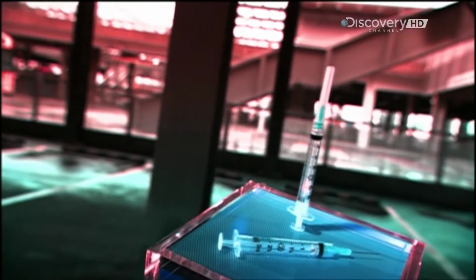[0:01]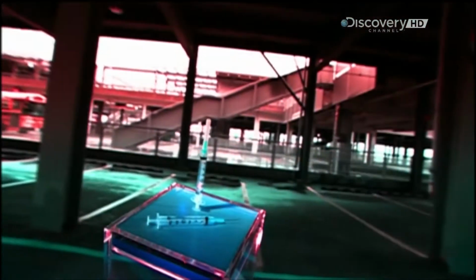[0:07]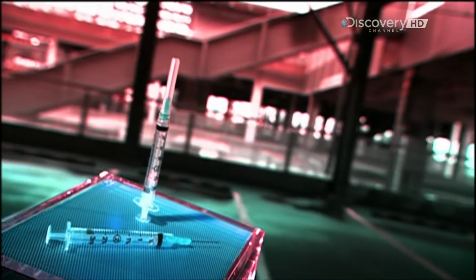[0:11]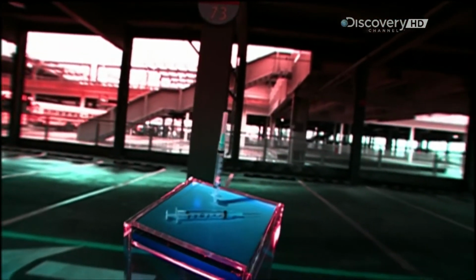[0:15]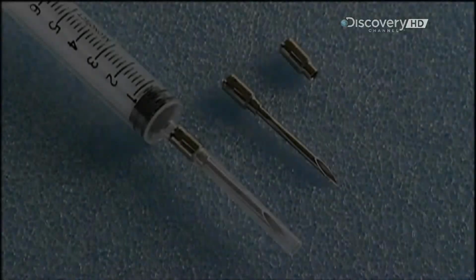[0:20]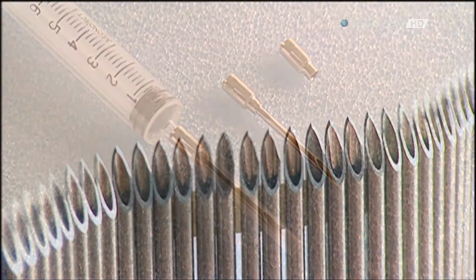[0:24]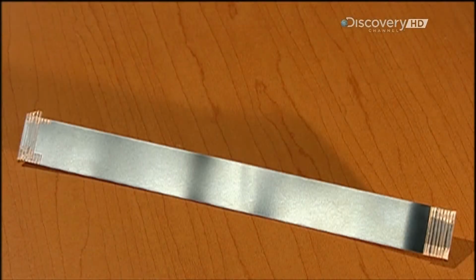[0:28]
The syringe was invented in the mid-19th century, but it wasn't until the 1950s that mass-produced disposable syringes came on the market, developed for the vast immunisation campaign against polio. Whether it's drawing blood or injecting medicine, this is one invention which has an important point to it. A syringe may make you cringe, but the treatment it delivers could be a lifesaver.
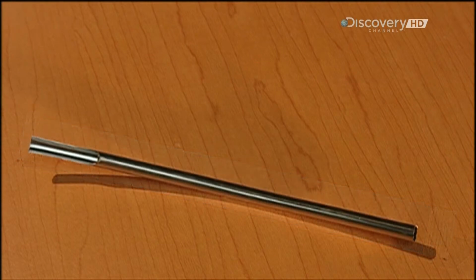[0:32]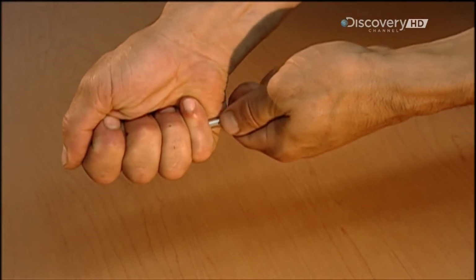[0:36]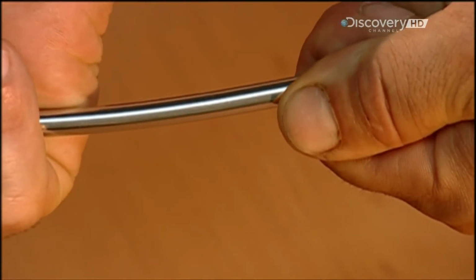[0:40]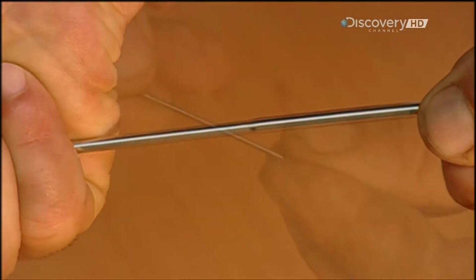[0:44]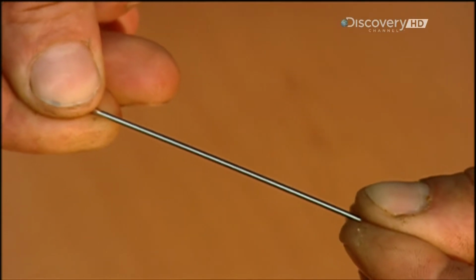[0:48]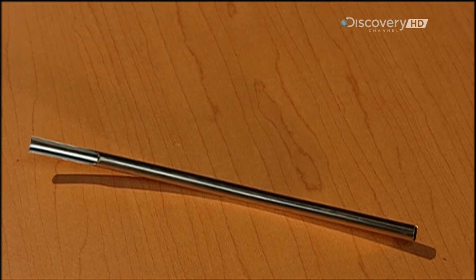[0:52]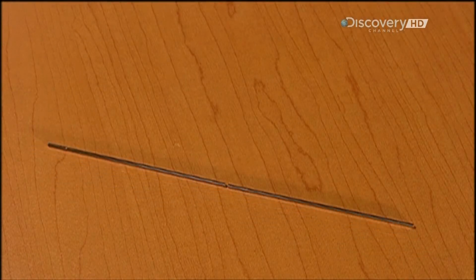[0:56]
To make a hypodermic needle, they start with a flat strip of stainless steel. A milling machine rolls it into a tube shape. A laser welds the seam together. But what makes the steel stiff enough to use is something called cold work, in which they press the tubing through a die several times. This also slims the tube dramatically, so now you have a thinner, tougher tube.
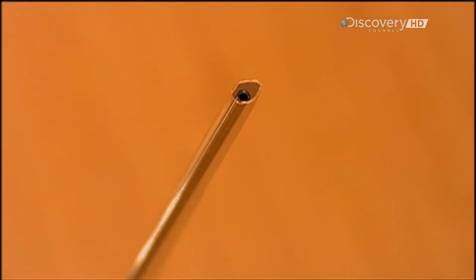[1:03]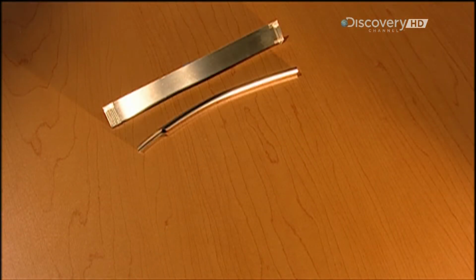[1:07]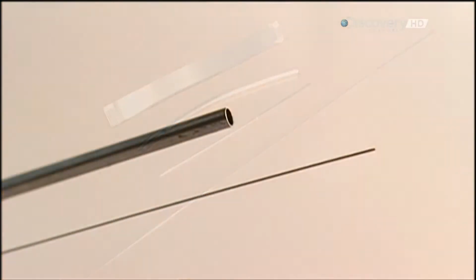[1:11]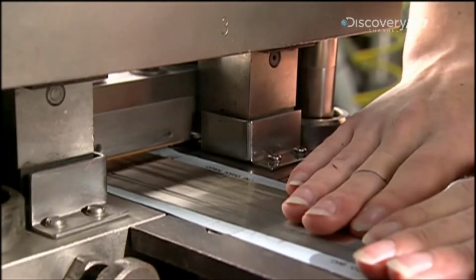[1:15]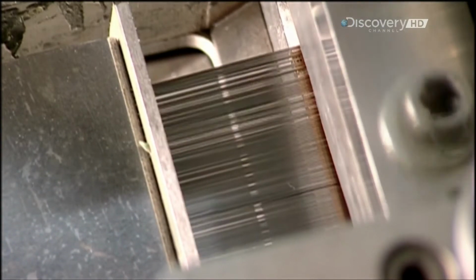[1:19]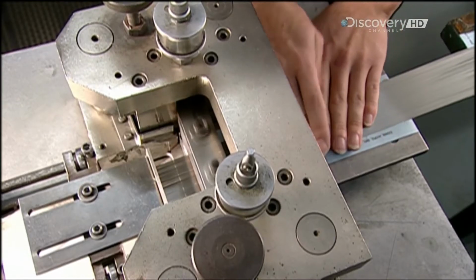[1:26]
It takes a couple of days to turn the stainless steel strip into a tube with needle potential, but it will have to be sharp to perform, and the next steps will focus on getting the steel tube to a point where it's more than just a blunt object. An electrically powered blade scores the walls of the tubes as rubber pads bear down and roll. This rolling causes the tubes to finally break at the score line. The tubes are being cut down to size, about 5 centimeters long.
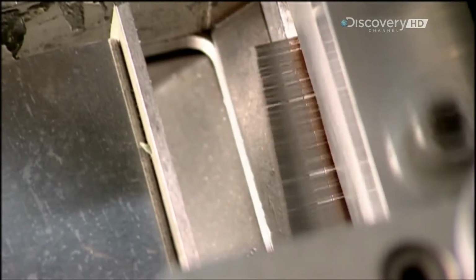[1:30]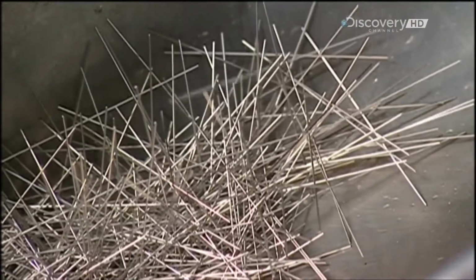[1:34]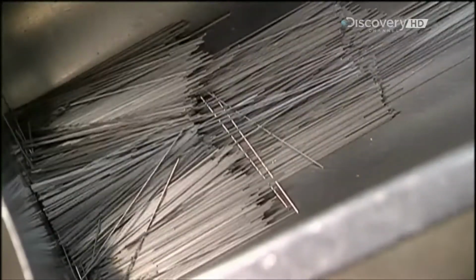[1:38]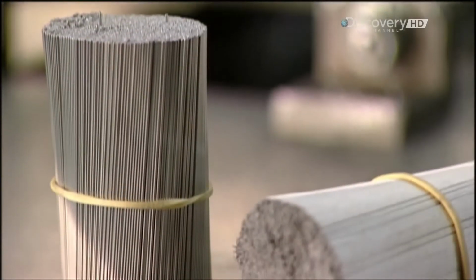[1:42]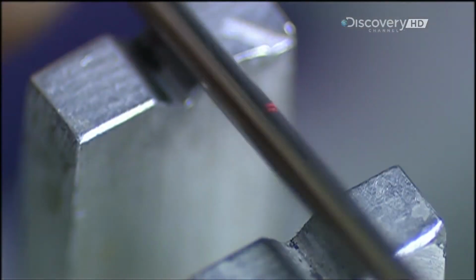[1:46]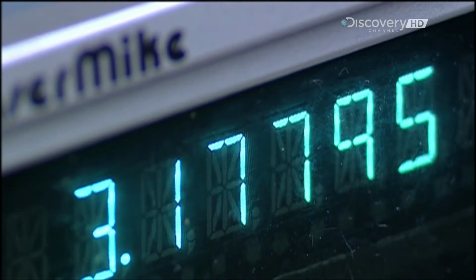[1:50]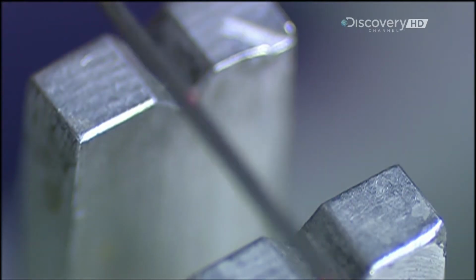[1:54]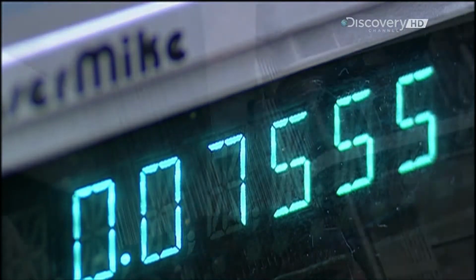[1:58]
The tubes fall into a bin, a tangled mess. The bin, driven by air pressure, agitates, and this shaking motion straightens them out. An operator bundles them together with elastic bands, but removes a few for checking. This micrometer uses laser light to measure the outside diameter. The tube is supposed to be 2 millimeters thick, and it's spot on.
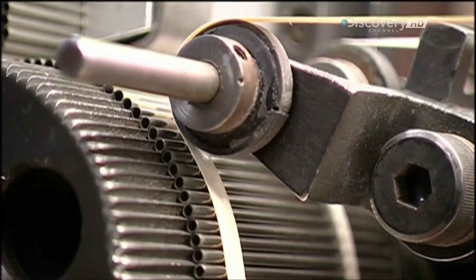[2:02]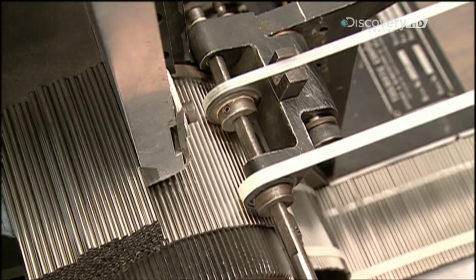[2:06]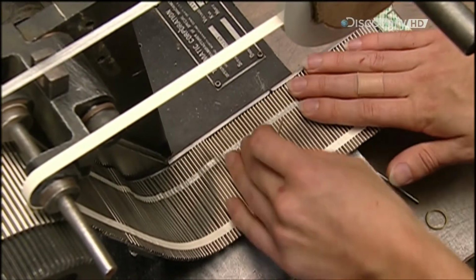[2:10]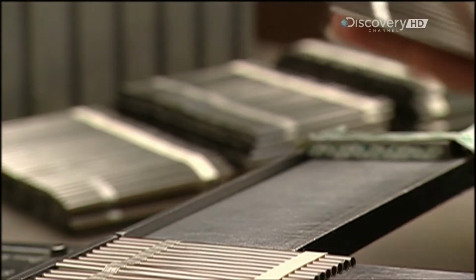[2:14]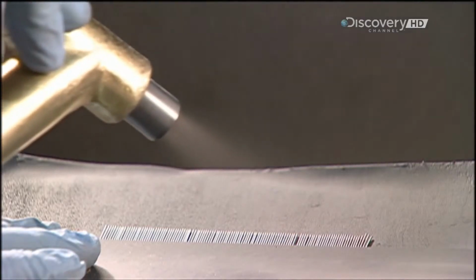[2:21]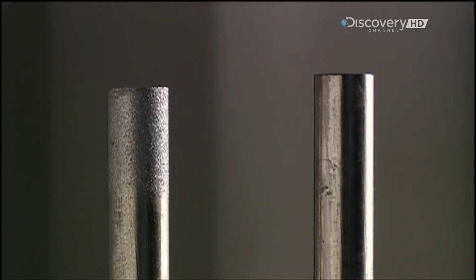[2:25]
Next, a mechanically driven drum rolls super adhesive tape onto the tubes. The tape will hold the tubes in place as more work is done on them. They cut 12-centimeter strips of the taped tubes, so that there are about 100 tubes per strip. Then, they spray aluminium oxide on the ends of the tubes. This roughens them, so that the surface will be easier to work with.
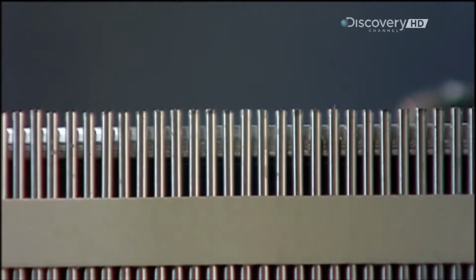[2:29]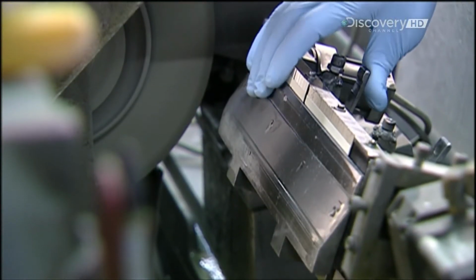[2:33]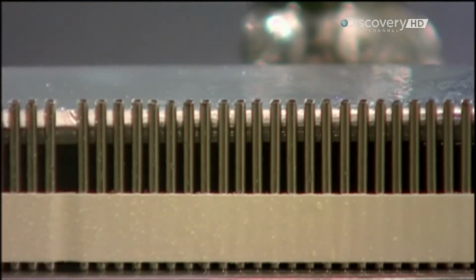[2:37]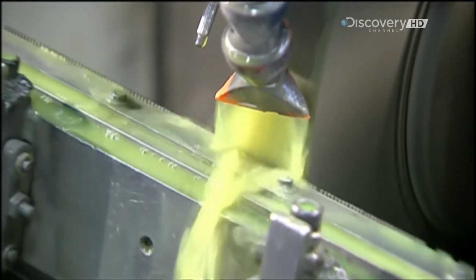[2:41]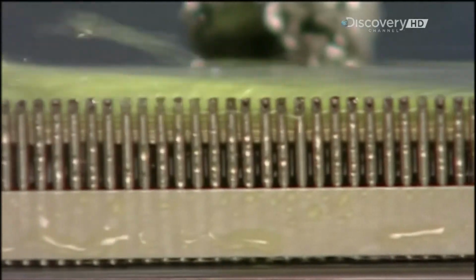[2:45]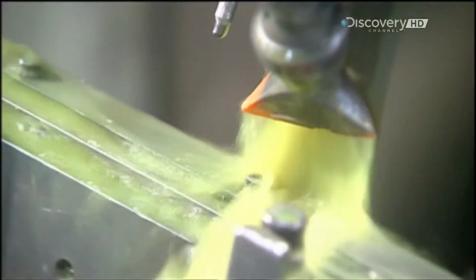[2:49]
Now they place the strips of tubes into the grinding fixture, and then they snap it shut. Coolant flushes over the tube tips as the fixture moves across a grinding wheel. The wheel grinds through the tops of the tubes, shaping them into a rough point. This is only the first grind, so it's not yet needle sharp.
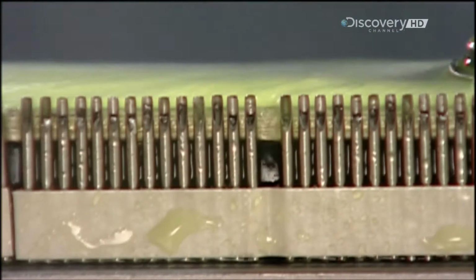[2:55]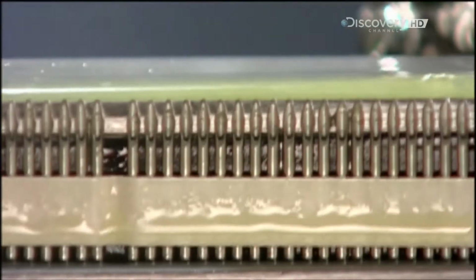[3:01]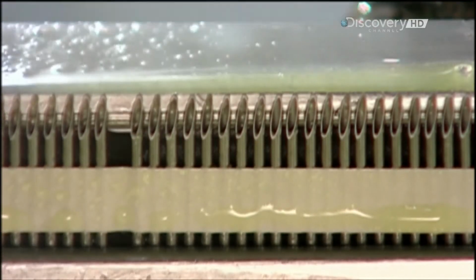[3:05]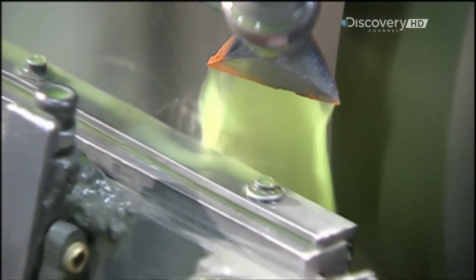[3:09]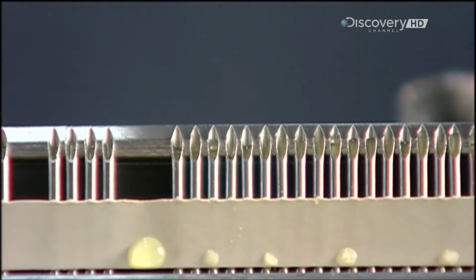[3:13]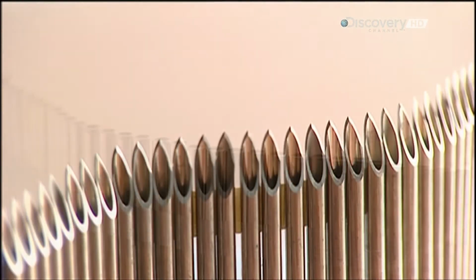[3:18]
Now, the fixture rolls and rotates the tubes. Then, it's back to the grind. The angle of the wheel is changed so that it sands the sides of the tubes. These two secondary grinds sharpen the tubes to a finer point. This is how they looked before grinding, and this is after, with their sharp needle tips.
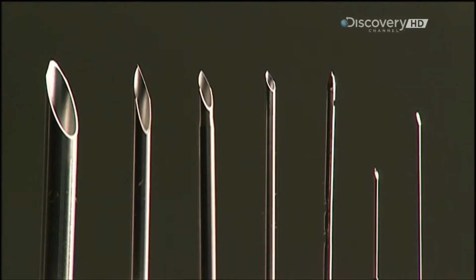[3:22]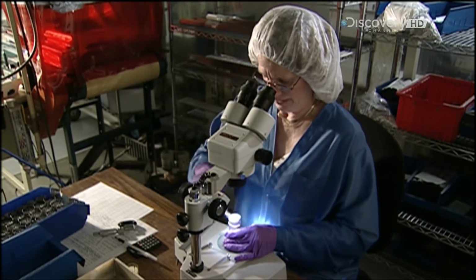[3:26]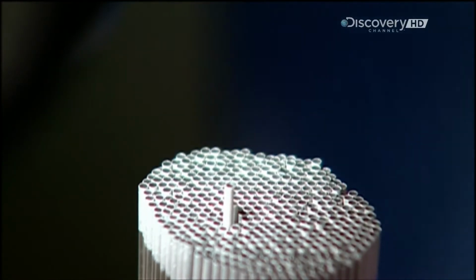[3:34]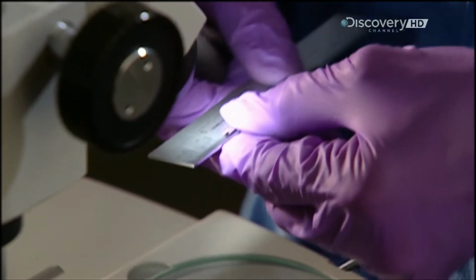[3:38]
Now it's time for the big inspection. The ends of the needles are pushed back to make sure they're even. And then, a needle is pulled out for sampling. The length of the grind is measured. It should be a few millimeters long.
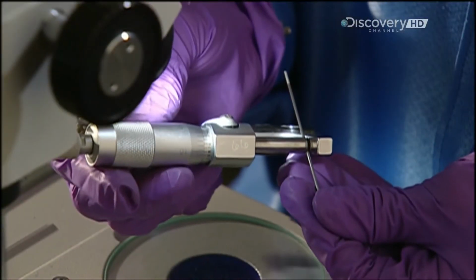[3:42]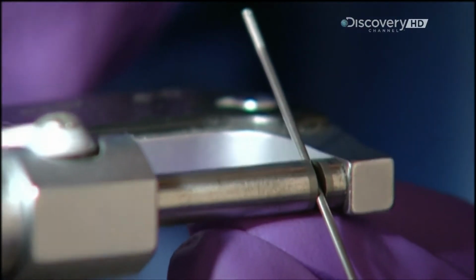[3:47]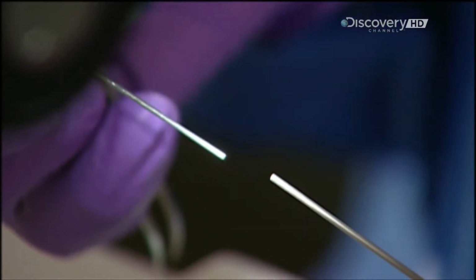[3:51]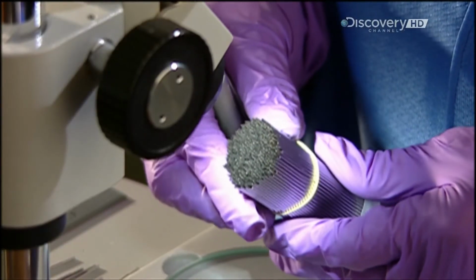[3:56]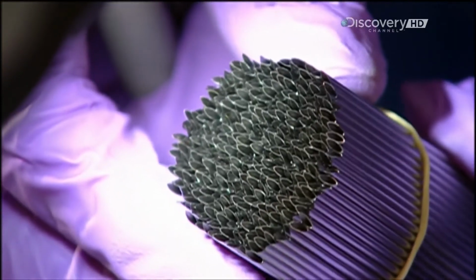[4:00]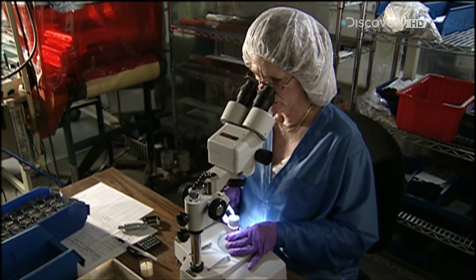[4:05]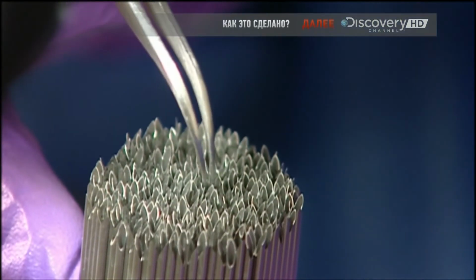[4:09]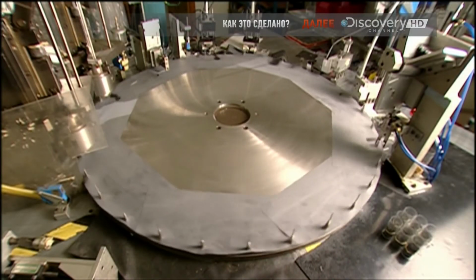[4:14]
The needle's diameter is checked with a micrometer. Holding the needle between posts, it measures the space between them. Then, the inside diameter is checked by inserting a plug gauge into the tube. Now, a bundle is inspected for irregularities or burrs. Using tweezers, one is removed for a close-up look under the microscope. Once they pass inspection, it's onto the automated assembly machine.
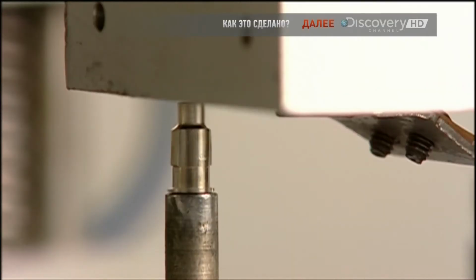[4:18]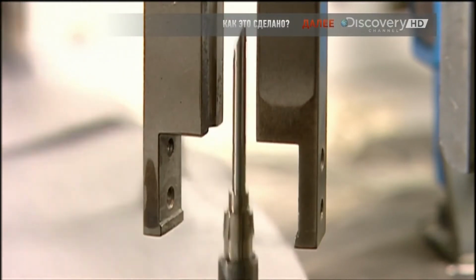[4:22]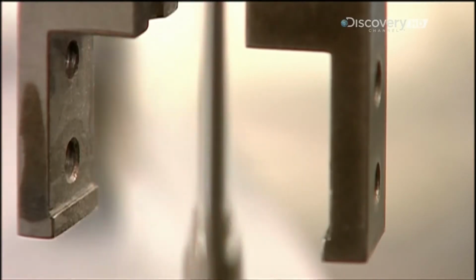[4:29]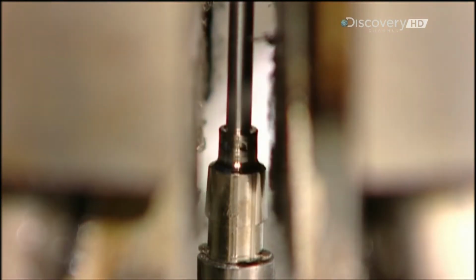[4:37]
Brass and nickel-plated fittings called hubs drop into pins on the wheel. Then needles fall onto the hubs. Metal fingers align them so they fit together precisely. The hub is the piece that will connect the needle to the syringe. Automated crimpers press the needle into the hub. Friction bonds them.
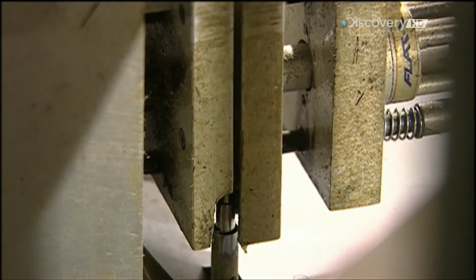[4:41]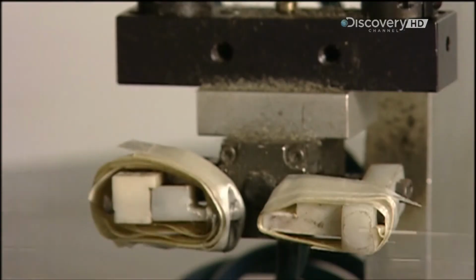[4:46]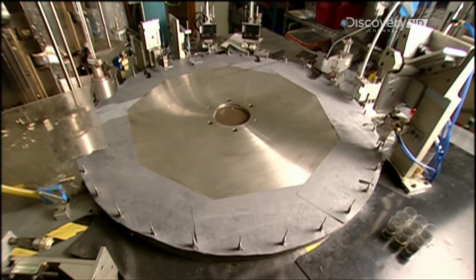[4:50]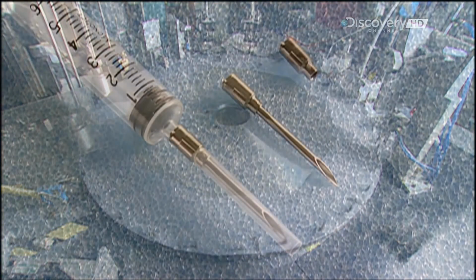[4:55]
Now two metal pads on the same wheel position the needle. A plastic sleeve drops down, encasing the point. The needles are now ready for you. But are you ready for them?